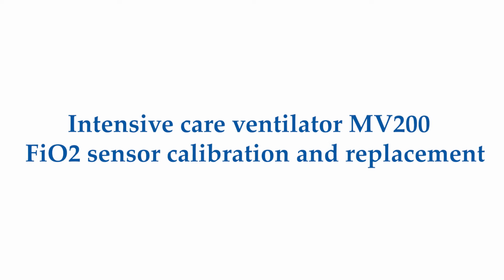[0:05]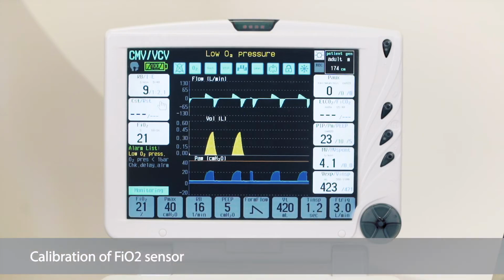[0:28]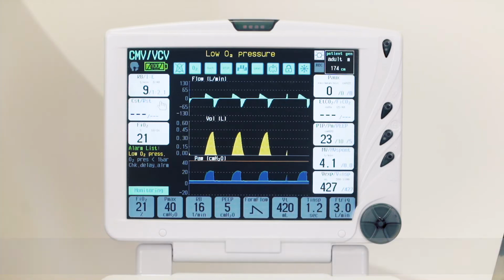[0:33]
Today I will tell you about FiO2 sensor replacement and calibration in intensive care ventilator MV200. Calibration of FiO2 sensor. Calibration of the oxygen sensor measuring the concentration in the inspiratory gas, FiO2, is used during maintenance, after replacement of the FiO2 sensor, according to the method, to check or replace the oxygen sensor during automatic control and calibration of FiO2 sensor, or in any cases, particularly if the concentration measurement error exceeds 2% during air ventilation.
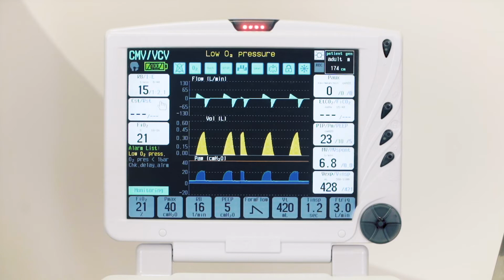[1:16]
The device has an FiO2 electrochemical type sensor. Its lifetime depends on oxygen environment time and oxygen concentration. At medium operation parameters, FiO2 sensor lifetime is more than 1.5 years. Calibration of FiO2 sensor is important in the final phase of the sensor life cycle to extend its lifetime and accuracy.
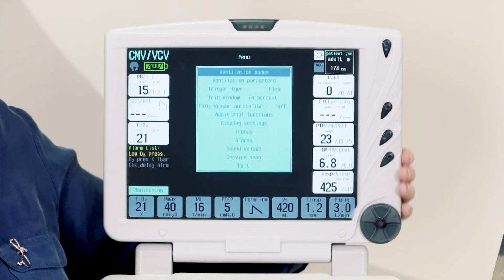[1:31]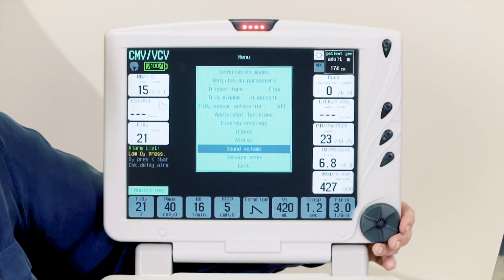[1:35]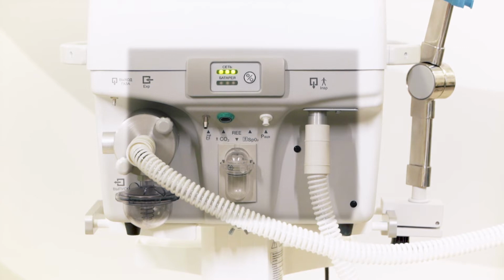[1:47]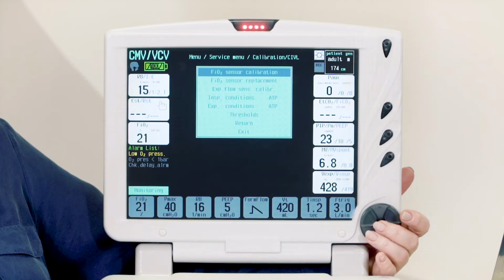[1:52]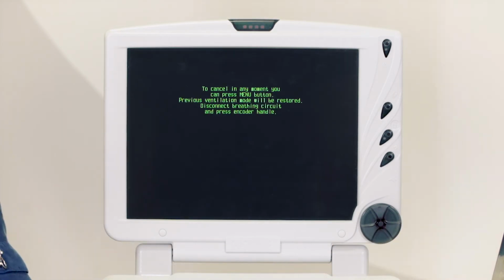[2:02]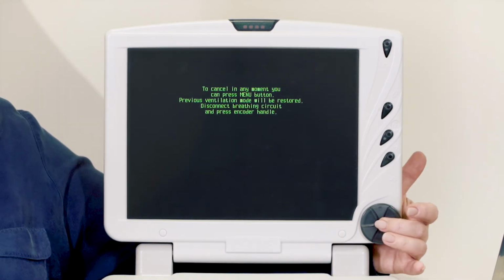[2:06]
For the calibration of FiO2 sensor, disconnect the device from the patient, press main menu, service menu, calibration, CIVL, FiO2 sensor calibration. Disconnect the breathing circuit. Press the encoder to start the calibration. Sensor calibration takes about 1 minute. Press encoder to continue.
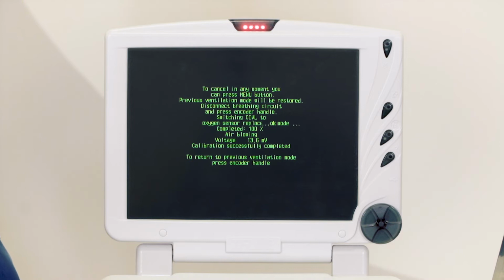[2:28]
After the message calibration successfully completed, restart the device and it's ready for operation. If the calibration isn't done, you need to replace the sensor or repair the device. After sensor replacement, calibrate it again.
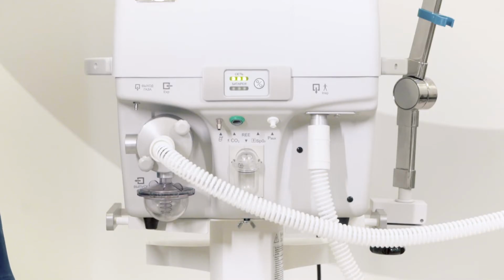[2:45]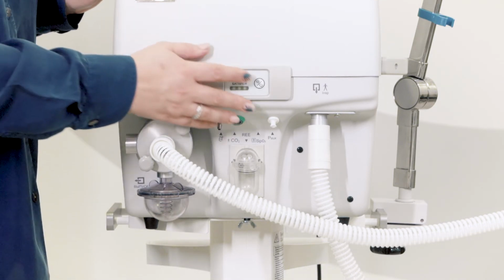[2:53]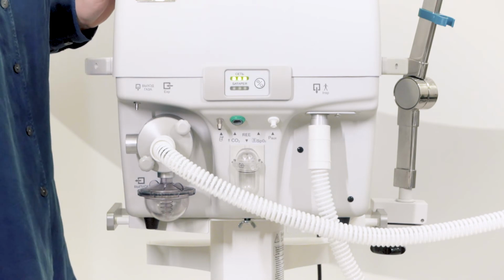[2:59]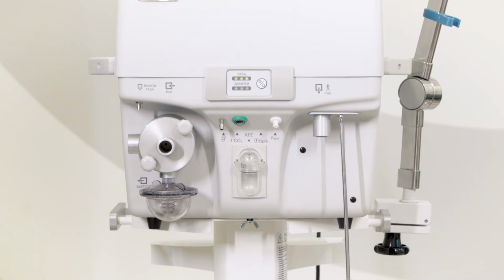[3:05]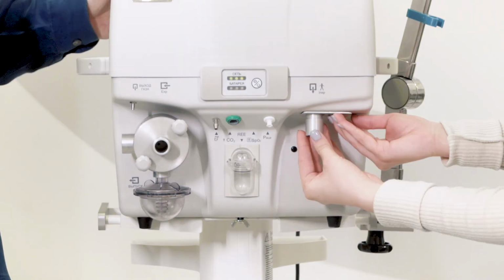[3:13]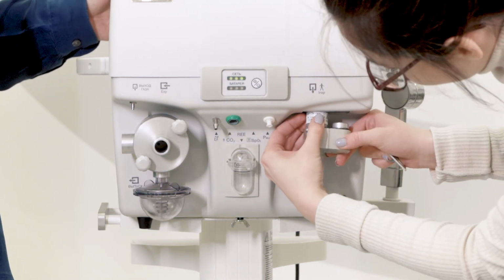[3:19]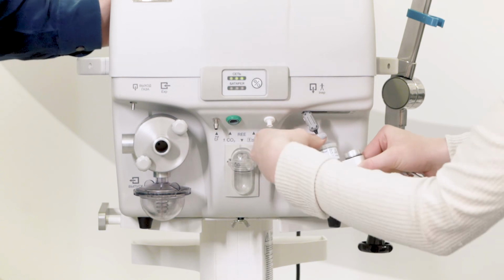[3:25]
FiO2 sensor replacement. For the replacement of FiO2 oxygen sensor, switch off the device. For this purpose, unscrew the 2 screws of the oxygen sensor cover. Carefully take the inspiratory connector assembly so as not to break off the wires of the connector. Disconnect the sensor power cable.
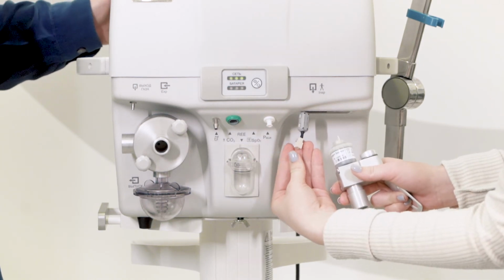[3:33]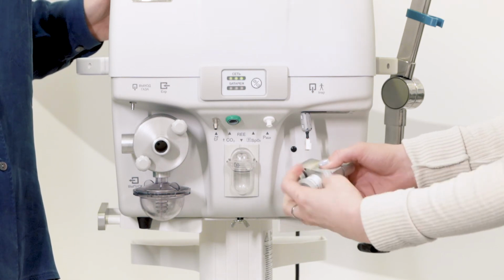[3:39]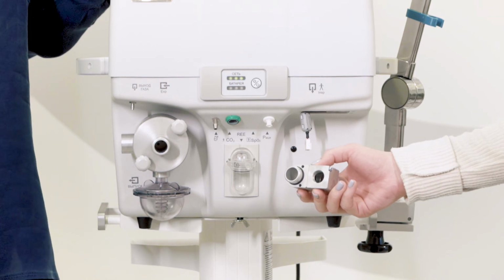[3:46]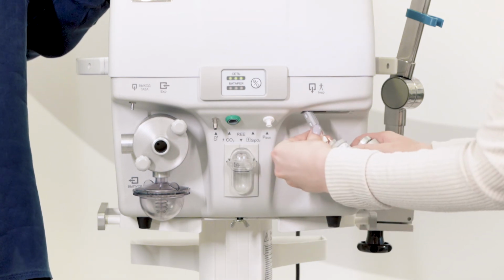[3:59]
By counterclockwise rotating, unscrew the faulty sensor. Install a new sensor. In some cases, a spare sensor can be included in the delivery kit. Assemble the inspiratory connector in the reverse order. Calibrate the oxygen sensor.